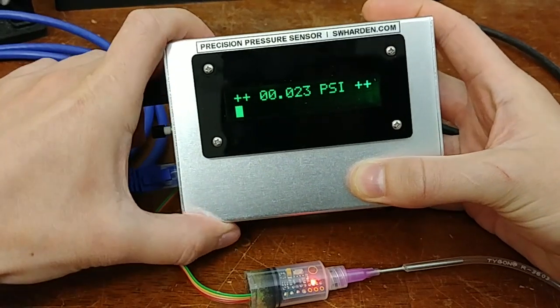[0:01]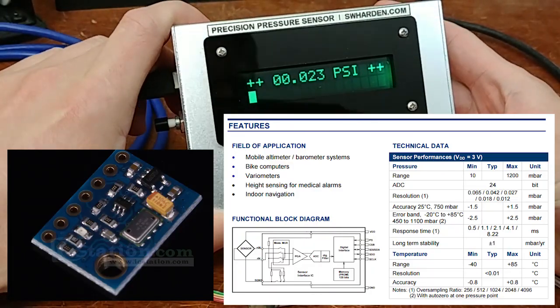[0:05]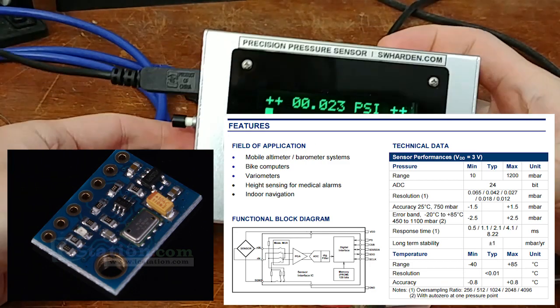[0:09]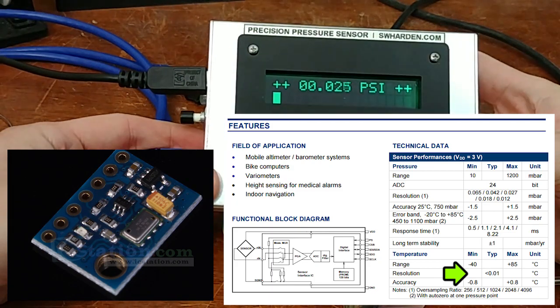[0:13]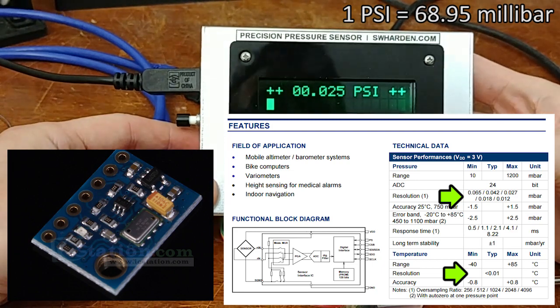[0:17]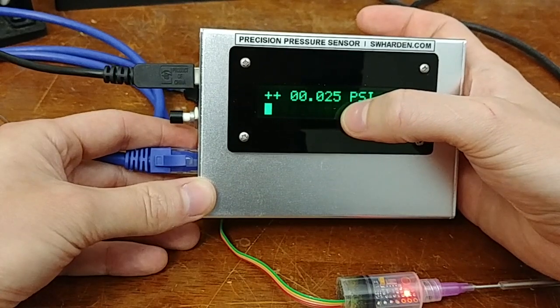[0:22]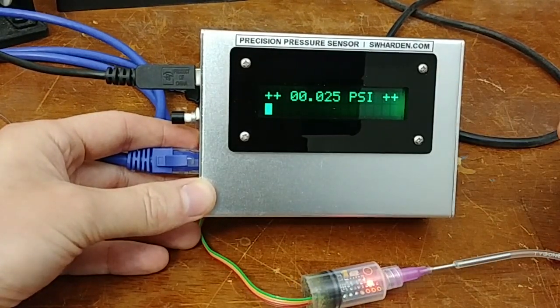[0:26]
This is a pressure sensor that I just made. It's based around an MS5611 24-bit pressure sensor. And this thing can sense temperature down to 1/100th of a degree Celsius and pressure down to 1/10,000th of a PSI. And for this display, I'm only having it show 3 decimal places. And the reason is that it kind of flickers a lot if I had the 4th decimal place.
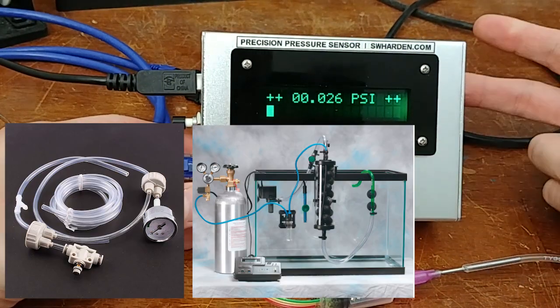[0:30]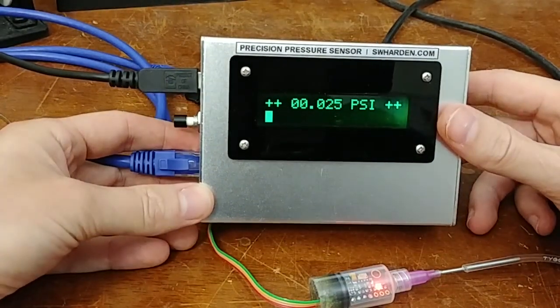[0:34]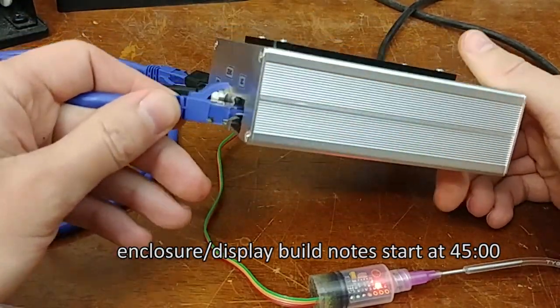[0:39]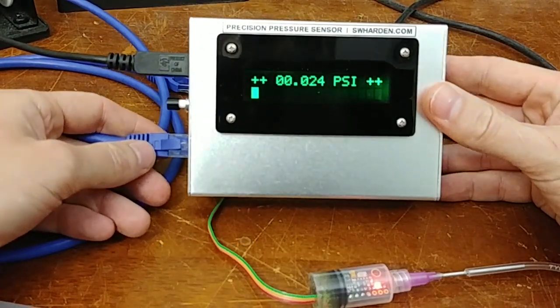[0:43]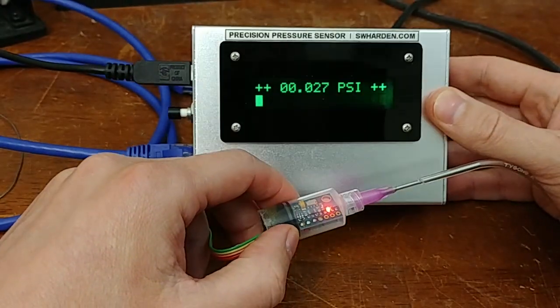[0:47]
And I wanted a pressure sensor because I'm building a yeast reactor as part of an aquarium thing that I'm building. You can Google what a yeast reactor is to learn more about that. But I also designed this in such a way that the same design can be used for industrial or scientific purposes. So if you want a quick and easy high precision pressure sensor, this is a good option.
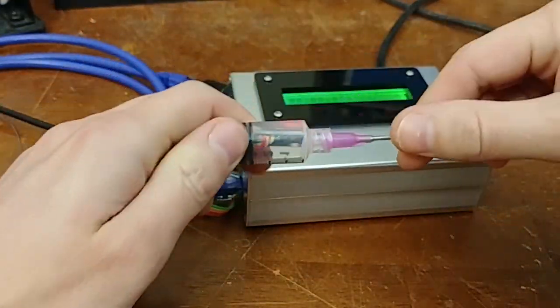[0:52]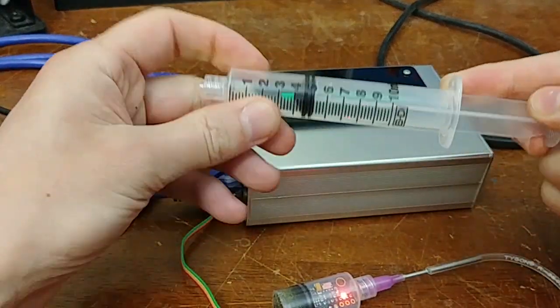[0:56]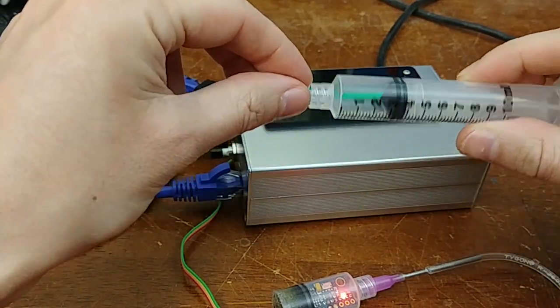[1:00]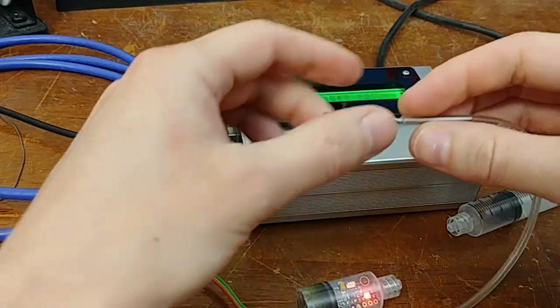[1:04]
So the actual pressure sensor is located in here. This is a syringe, kind of like this. So this is a 10 milliliter syringe. You can get these on Amazon very inexpensively. And they have these convenient little twist connectors, so you can twist anything to the end. And you can also get these blunt needles on Amazon.
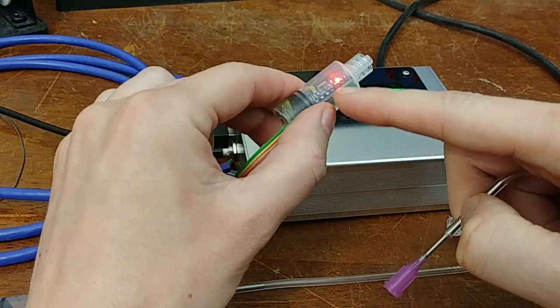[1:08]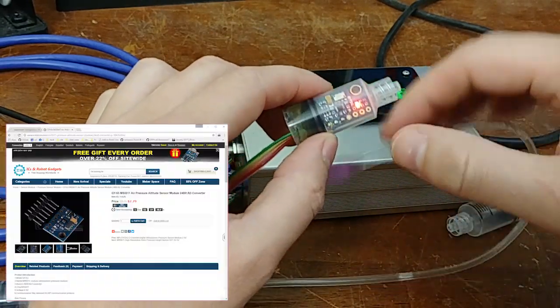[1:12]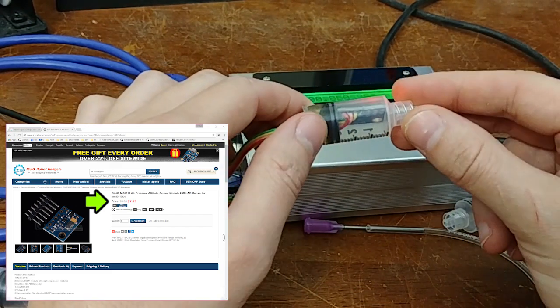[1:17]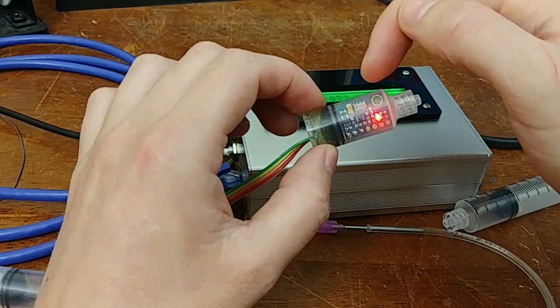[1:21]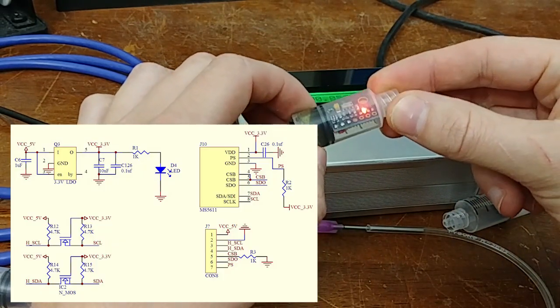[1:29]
And here is a breakout board for the MS5611. And I got the breakout board from icstation.com. And this board is pretty cool. It's a little bit less than $10. And it already has the pressure sensor, which is the small box, the silver device on the very top. And it's broken out so that it can accommodate a 5-volt power supply.
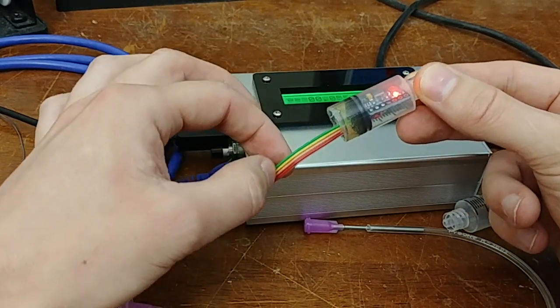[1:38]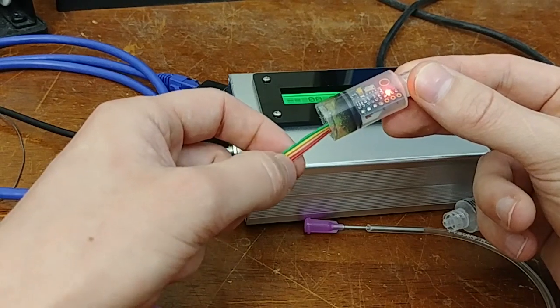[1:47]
And it has all the circuitry it needs, so you can just interface it directly with a microcontroller using an I2C interface. So of these 4 wires coming in, 2 are power, so plus 5 volts and ground, and the other 2 are two-wire interface, or I2C. So there's a clock line and a data line.
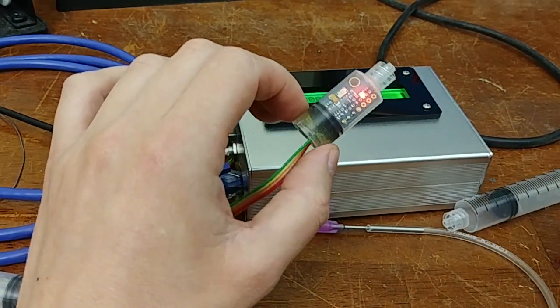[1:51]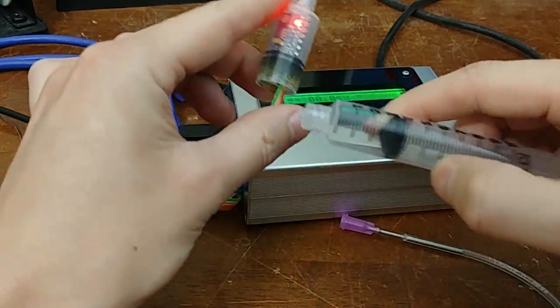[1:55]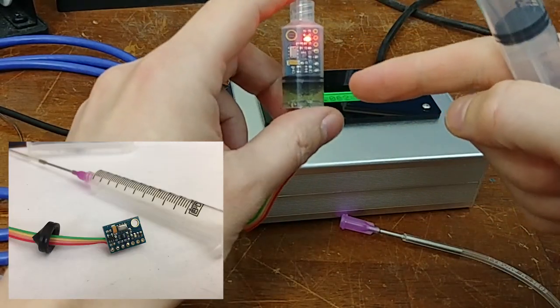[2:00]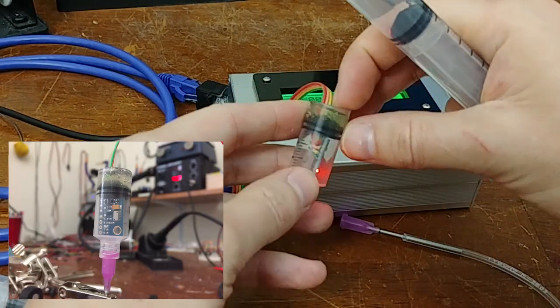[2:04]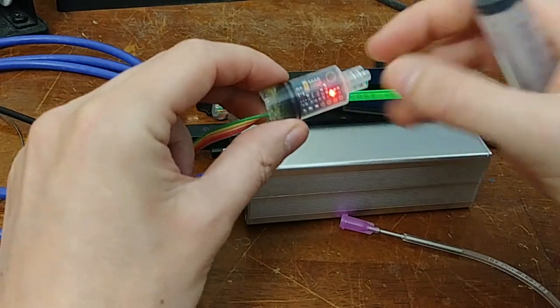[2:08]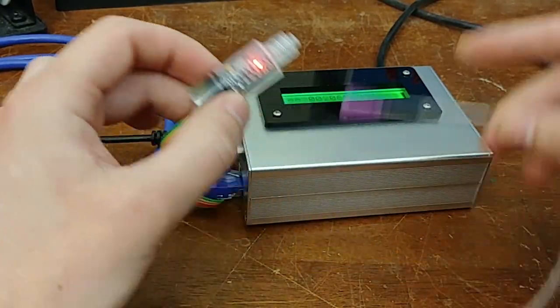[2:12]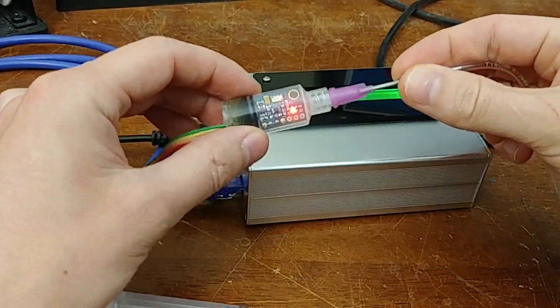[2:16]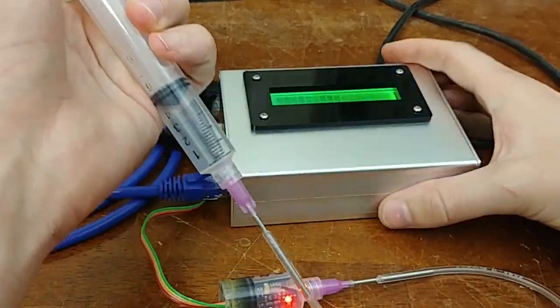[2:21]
The plastic enclosure is just one of these 10 milliliter syringes cut off with the razor blade, and then I took the little stopper off and inverted it, and then filled it with an epoxy that dries hard. So this is a hard plastic that's airtight on top now. So I've got my pressure sensor, wires coming out of it, and an easy connector that lets me connect it to whatever I want. So for this example, I'm just going to connect it to a tube so I can adjust the pressure here and show you what it looks like.
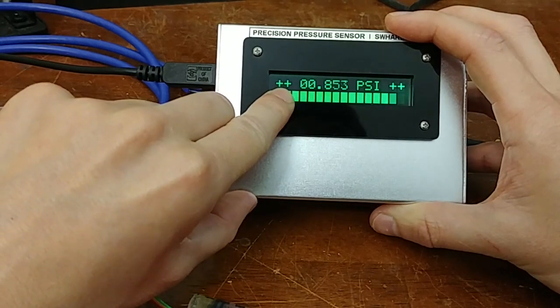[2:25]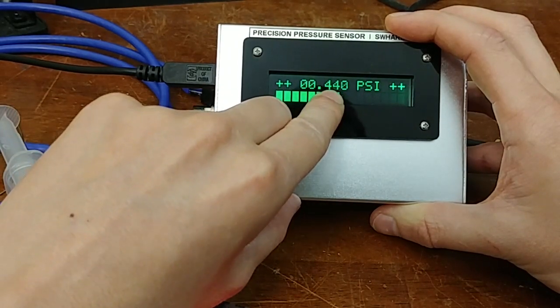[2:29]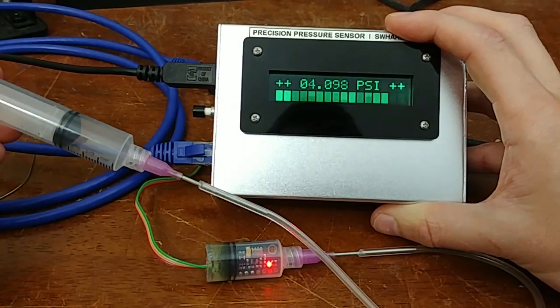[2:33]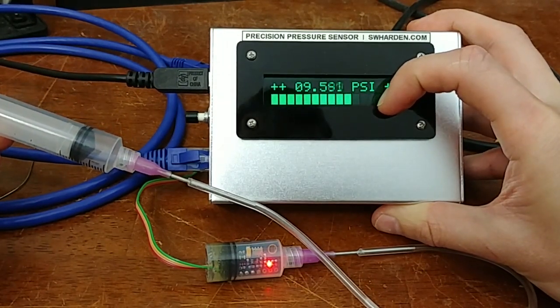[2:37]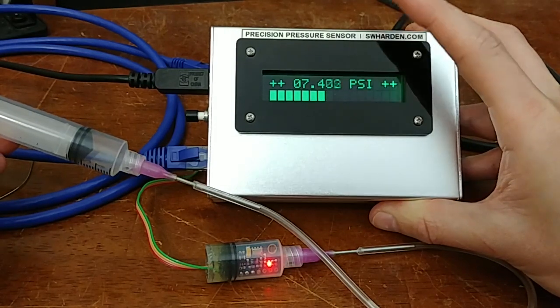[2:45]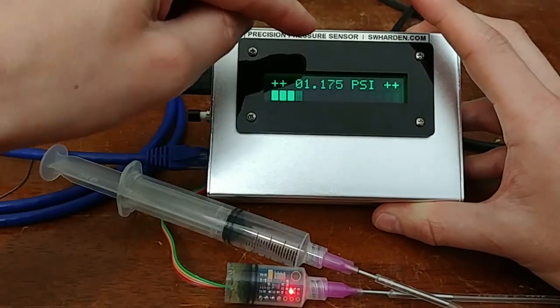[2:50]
So the plus sign here shows that it's a positive pressure. It'll turn minus when it goes negative. And this is the pressure in the pressure sensor. So I can kind of slowly increase it. And the bar at the bottom is a bar graph of pressure with respect to the nearest PSI. So if I slowly let go, it goes from 8, it'll go down to 0, and then 7 goes down to 0. So that makes sense. And if I let go, you can see this slowly relax, and the pressure will eventually come back to 0.
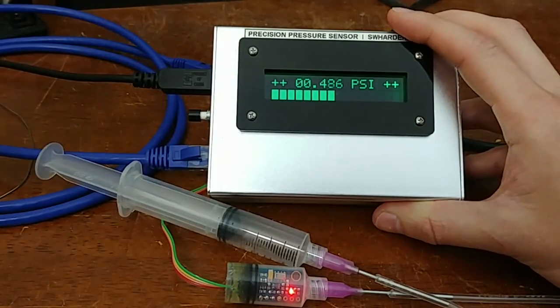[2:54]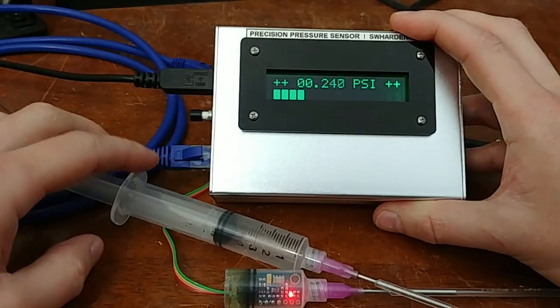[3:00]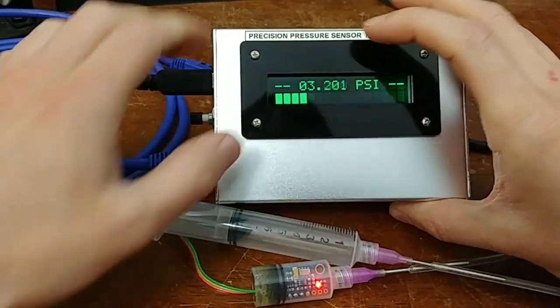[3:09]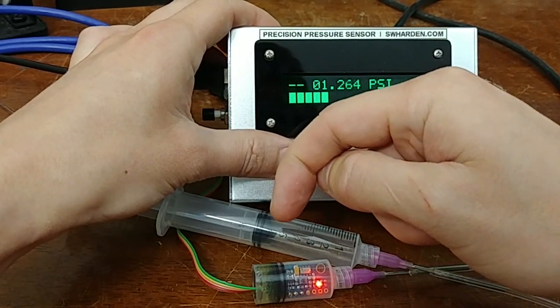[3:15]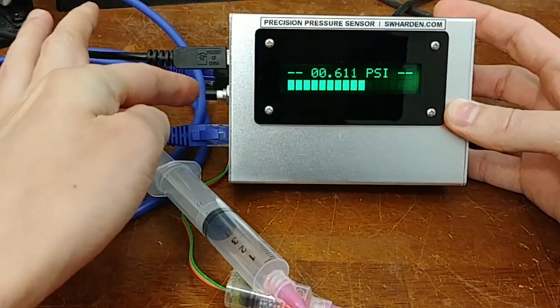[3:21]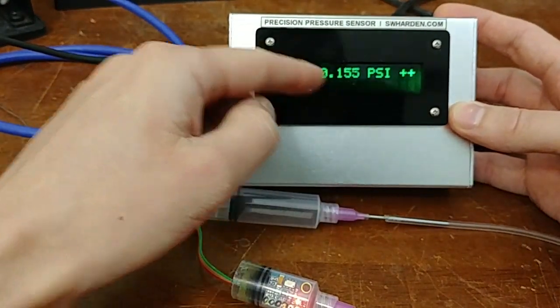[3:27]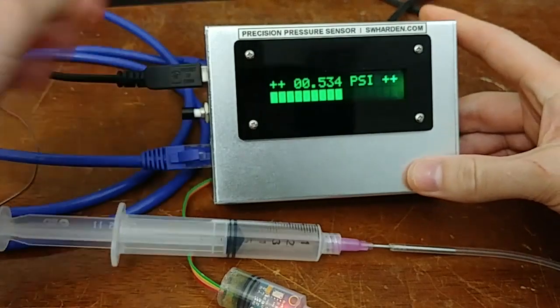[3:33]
For the yeast reactor application, there is a desire that I have to set 0 other than atmospheric 0. So I'll demonstrate that here. Actually, let me go ahead and I'll show you that this can do a vacuum. So if I apply negative pressure, we can see this turns negative, and it shows right now we have about negative 2 psi, and it's increasing as suction just naturally draws the plunger forward. But I can push this reset button here, or the 0 button, and when I push it, it makes that the new 0. So as it is equilibrating, it actually appears as if it's increasing. So I'll take this out just to kind of reset it, hit 0. So that's a pretty good 0.
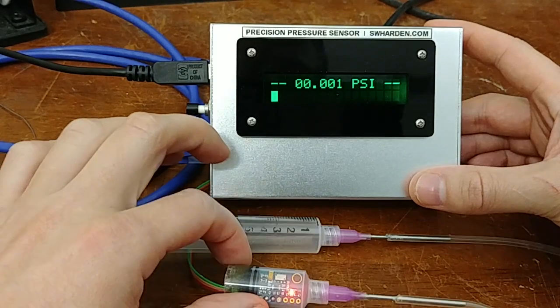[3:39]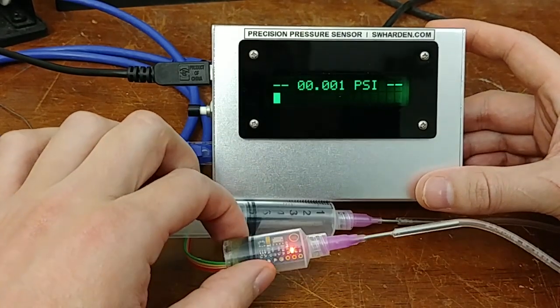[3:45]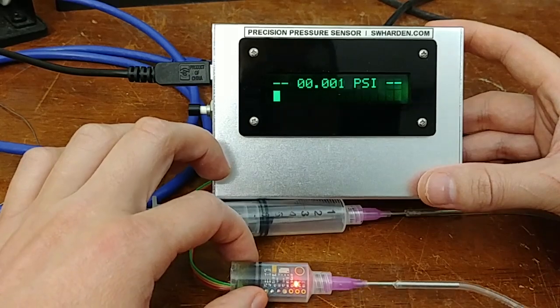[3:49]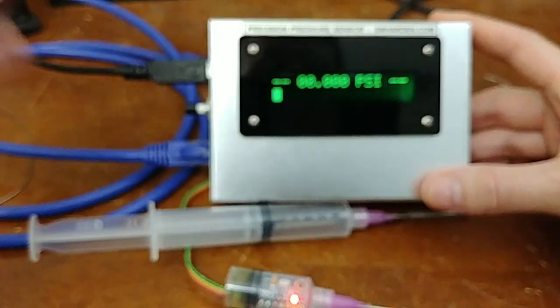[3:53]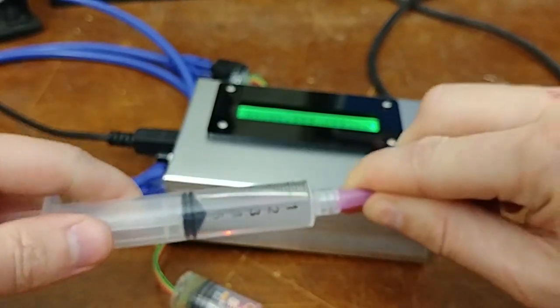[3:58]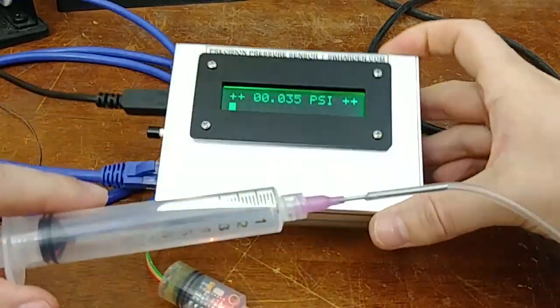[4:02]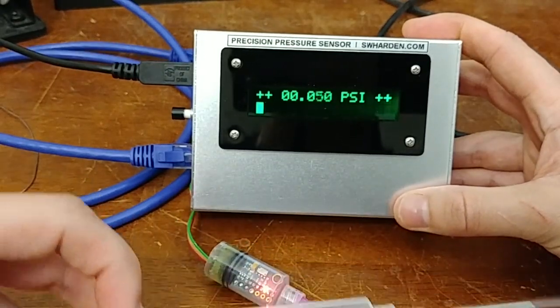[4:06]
This thing has a limit. I forget what it is. I think it's maybe 2 atmospheres of pressure, so about 24 psi. You're not going to hook this up to a huge high-pressure air tank or something like that. But as long as your application calls for precision measurement somewhere around an atmospheric pressure, this is great. I don't know if I can max it out. Let me try. Okay, so we've got 1 full syringe. I'm going to give it a lot of pressure.
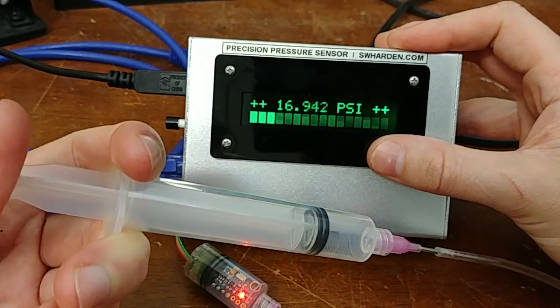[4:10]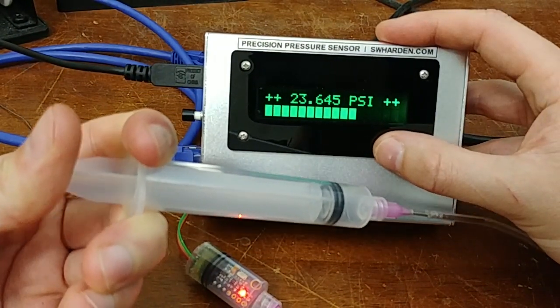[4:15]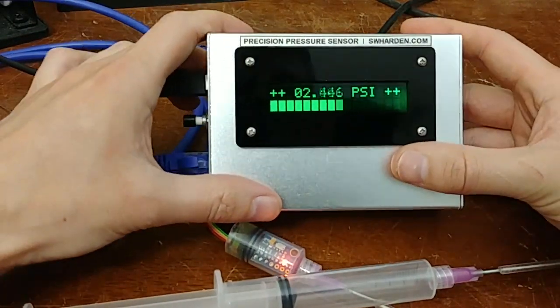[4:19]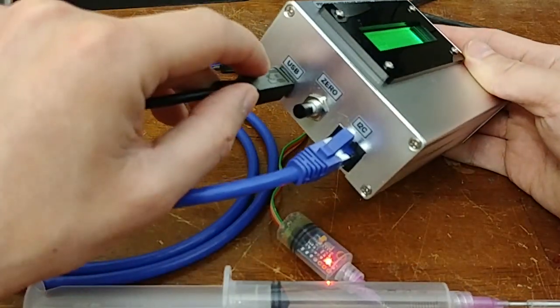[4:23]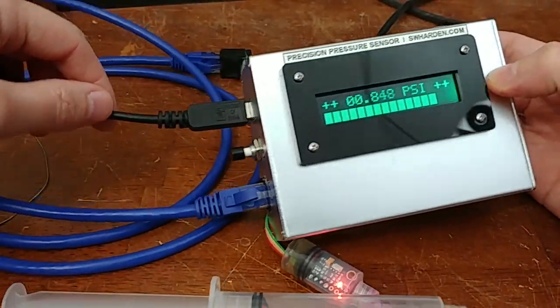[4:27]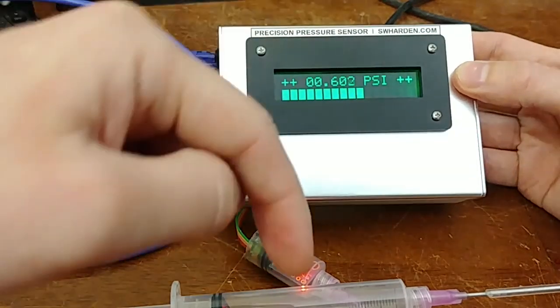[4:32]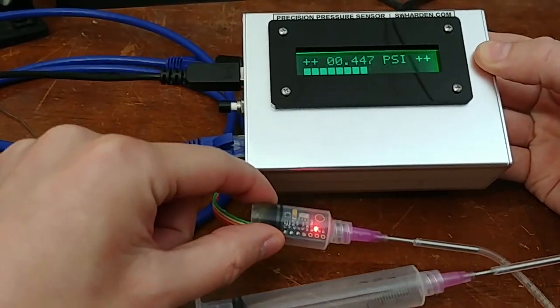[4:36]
And yeah, it looks like it maxes out at about 23 psi. But I mean, shoot, that's plenty above what my application is. So the ports on the side, this USB is not being used for data currently. Right now it's just being used for power. So it's going to any USB port. That gives it the 5 volts it needs to power the screen, the microcontroller inside, and the pressure sensor, which has some regulation on board that drops it down to 3.3 volts as well.
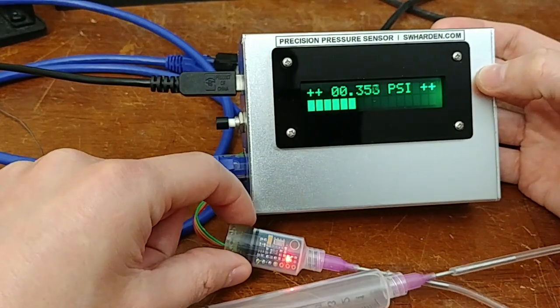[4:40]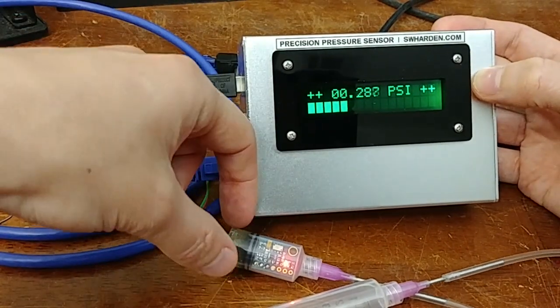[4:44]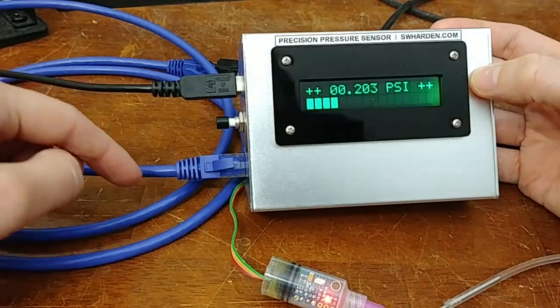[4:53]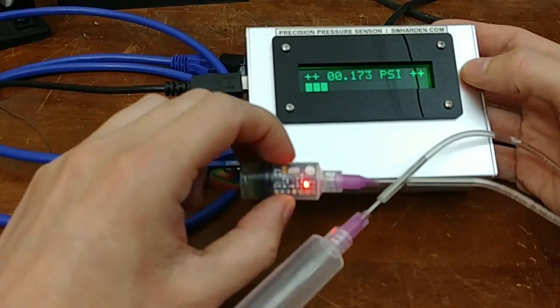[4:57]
And actually, there's another consideration. USB power is typically noisy, and this is a precision device. That's another advantage of having this little breakout board. It's pretty convenient because it has the power regulation circuitry on the board. So I don't worry that I'm sending noisy voltages down these wires. It does a pretty good job of cleaning it up at the level of the board.
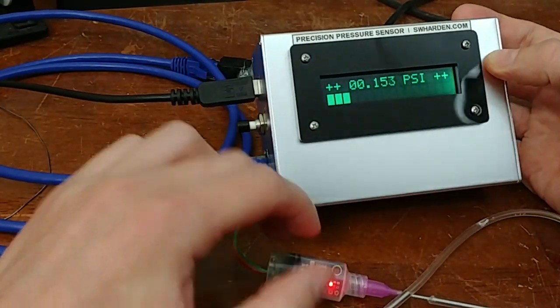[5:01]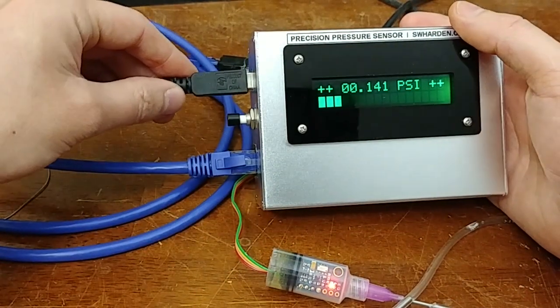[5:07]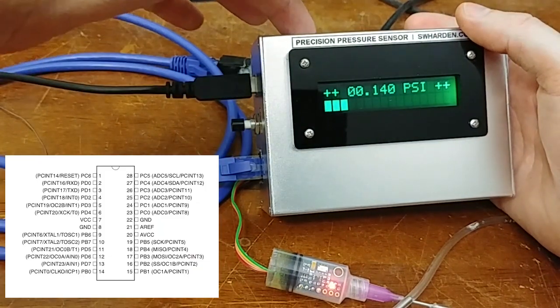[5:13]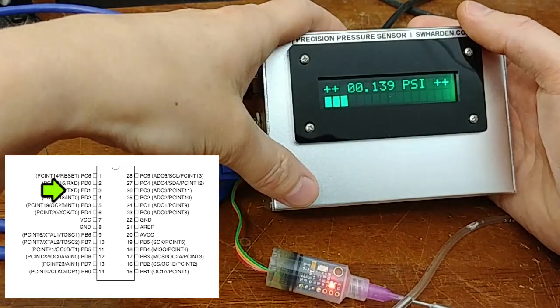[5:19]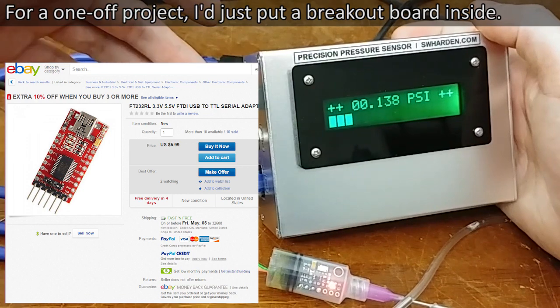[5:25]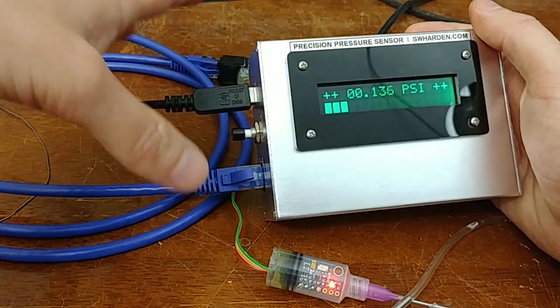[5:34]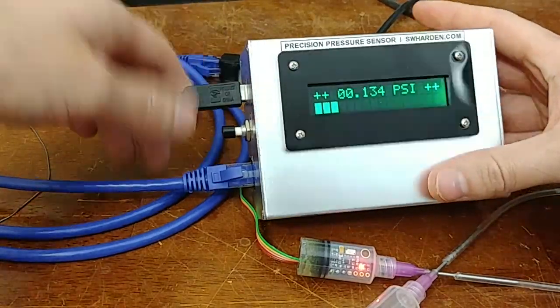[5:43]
For my application, I don't need to log these numbers into a computer, but since we already have a USB interface, it would be extremely easy to do just that. Probably the only difference is the microcontroller inside. I would use the serial transmit pin, because it natively supports a USART serial protocol. I would interface it with an FTDI chip as a USB to serial adapter, and then I could just hook it up to the data plus and minus lines of the USB port. So with no extra connectors, I could make this an active USB device that looks like a serial port to your computer that just continuously dumps these values, if I were interested in that.
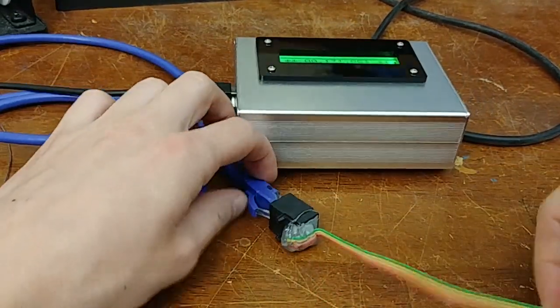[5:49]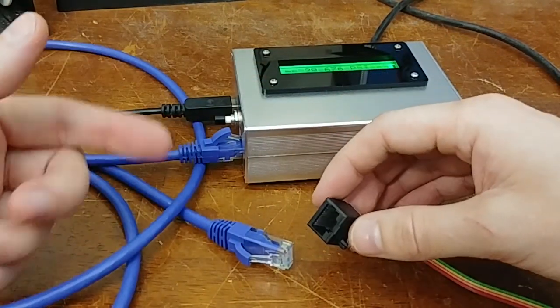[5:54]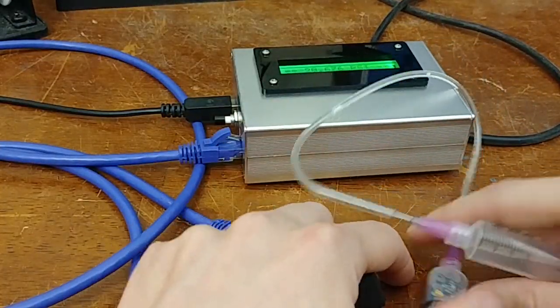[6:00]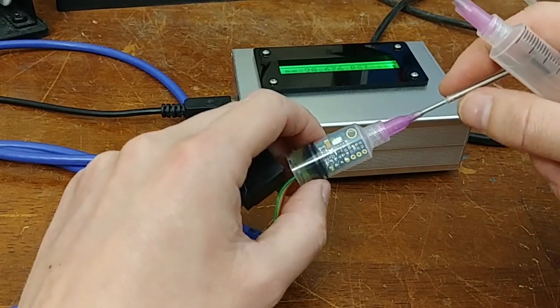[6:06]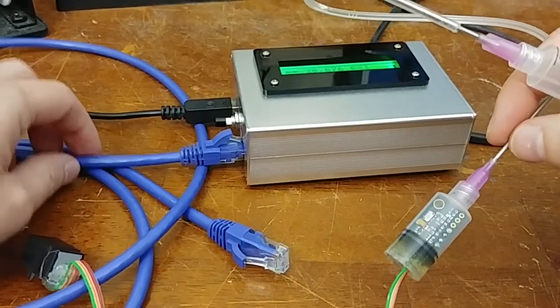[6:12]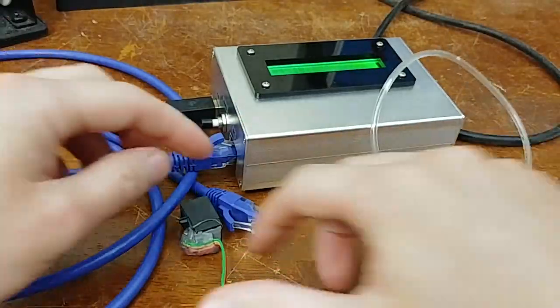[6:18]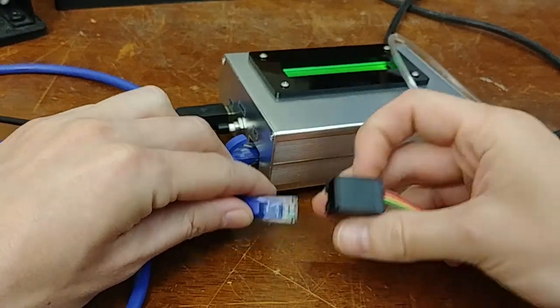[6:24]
Also, we already talked about what these four lines are, but it's kind of cool because I interfaced this with an Ethernet jack, and this isn't using Ethernet protocol, it's just taking advantage of the twisted pairs to send I2C over a long distance. And I2C isn't always trivial to send over a long length of wire, so Google around how to do it. You can get I2C drivers, and in this case, I'm just taking advantage of the twisted pair nature of the cabling to let me have an arbitrary amount of distance between the sensor and the display. And then I have another connector here. So when these are connected, I can sense pressure in real time.
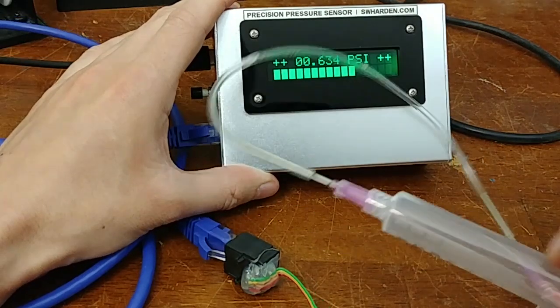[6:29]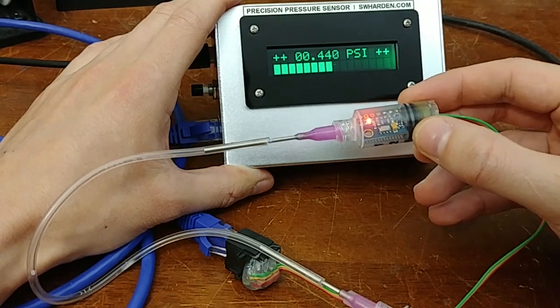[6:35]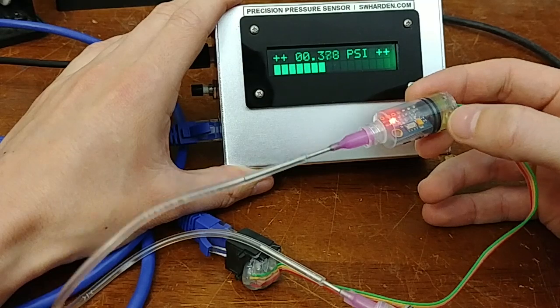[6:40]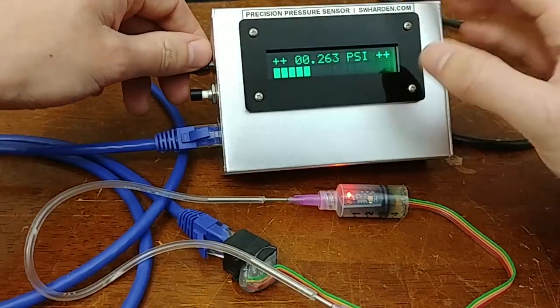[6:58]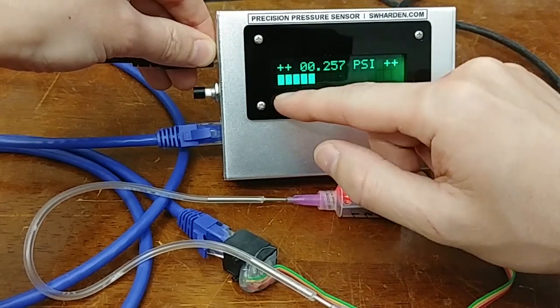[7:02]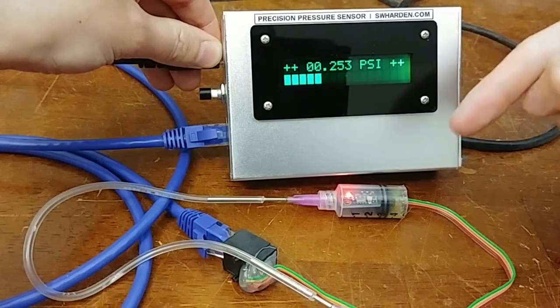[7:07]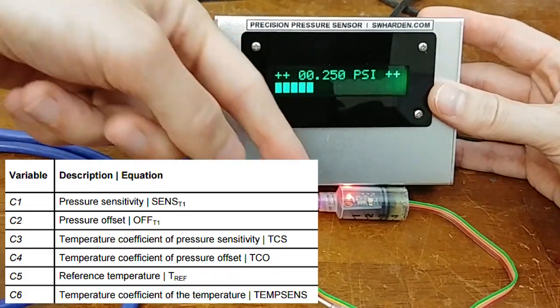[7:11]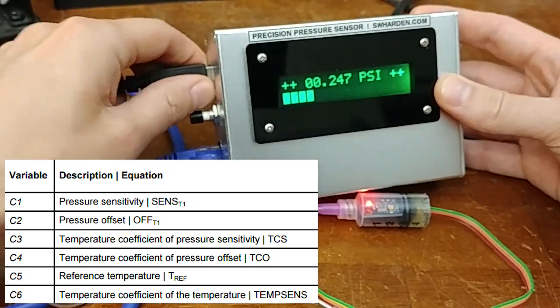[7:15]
I'll also take a second to mention that in order to generate a precise pressure reading, you have to have a precise temperature reading, which is why there's a 24-bit thermometer built into this device. Right from the factory, this device has a calibration memory bank where each device is individually calibrated, and things like its offset, its sensitivity, and its pressure sensitivity are measured and stored on the chip. So if I power cycle this, you will see a debug message that goes really quickly, but it'll say something like C1, C2, C3. Those are the program memory values that were stored at the factory where this was made. We're going to go through the data sheet and talk about this in more detail, but I'll power cycle it here so you can see.
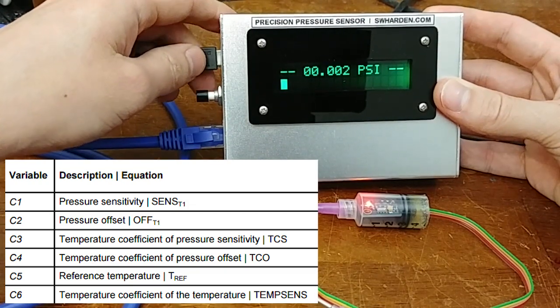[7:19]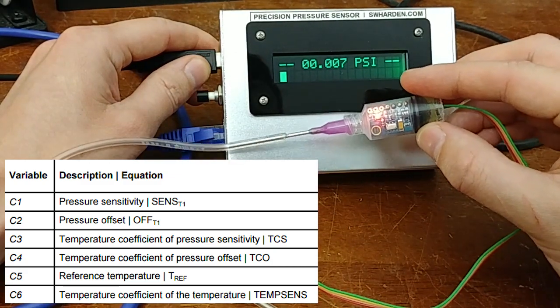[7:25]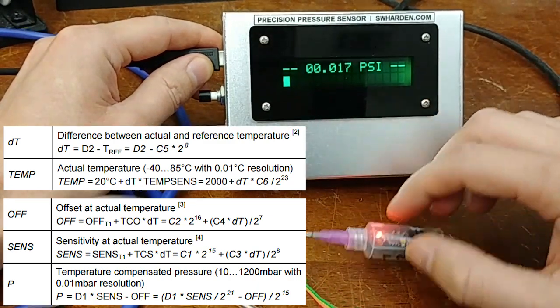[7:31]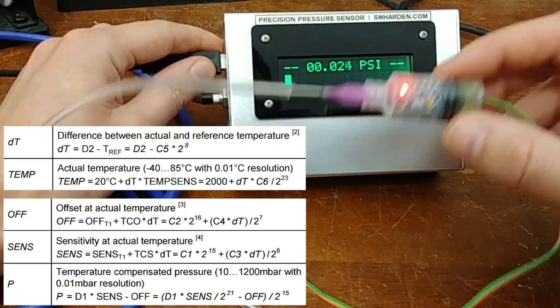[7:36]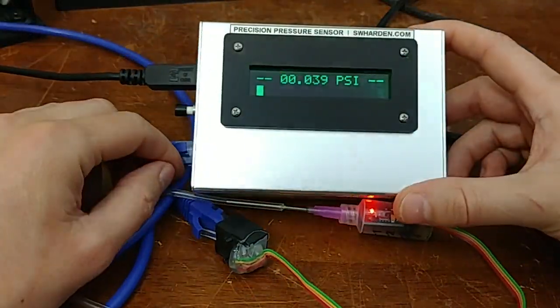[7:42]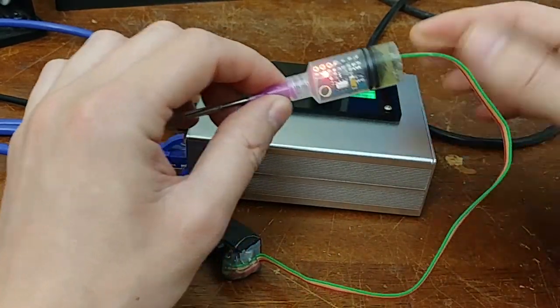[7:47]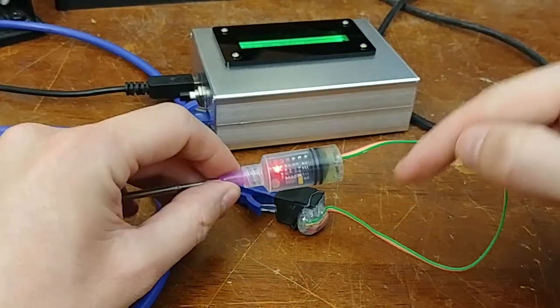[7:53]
Yeah, so those six values help take the 24-bit number from pressure and temperature, and by running it through an equation, which is also listed in the data sheet, you can generate a very precise pressure measurement using the pressure and temperature readings off of here. So let's go into a little more detail, and I'll show you the design considerations behind how I actually built this, and show you how to interface the pressure sensor directly with a Bus Pirate, which is pretty cool. We don't need any custom programmed microchips for that. We can interface this directly with a Bus Pirate, poke around, probe some of its data, and then record and plot some of its data using Python in real time.
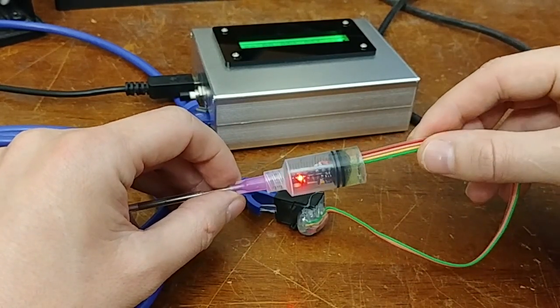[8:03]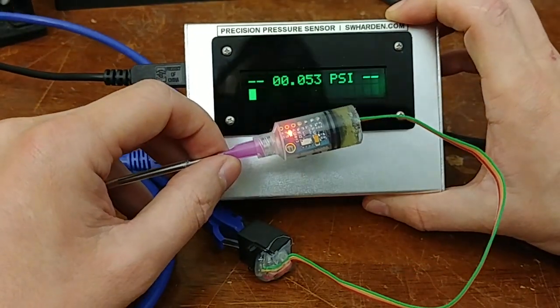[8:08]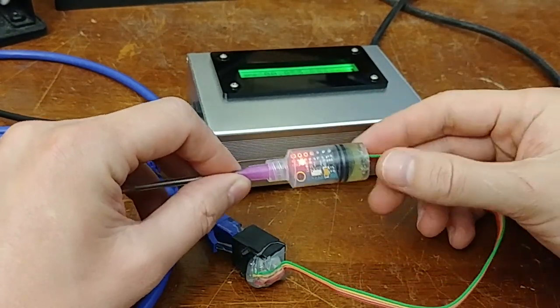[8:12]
And we can also sniff around and observe the protocol using a logic analyzer. So this video, rather than just demonstrating what this does, will also go through and show a little bit of a step-by-step on how I designed a microchip to interface this sensor. So let's take a closer look.
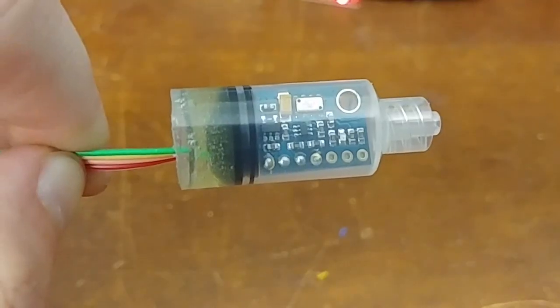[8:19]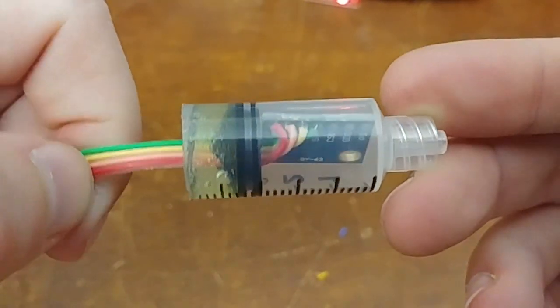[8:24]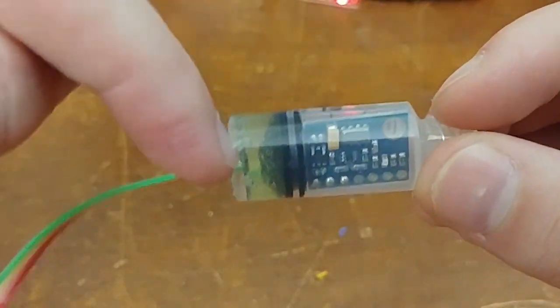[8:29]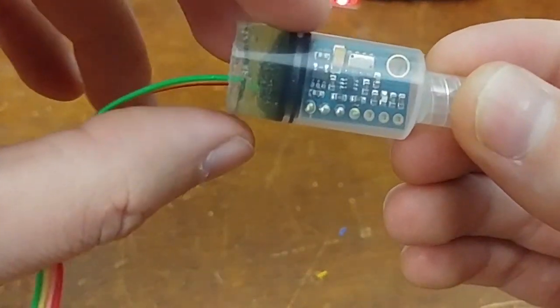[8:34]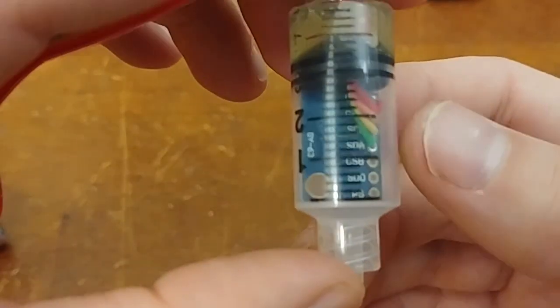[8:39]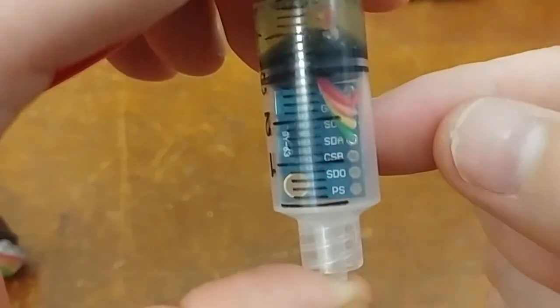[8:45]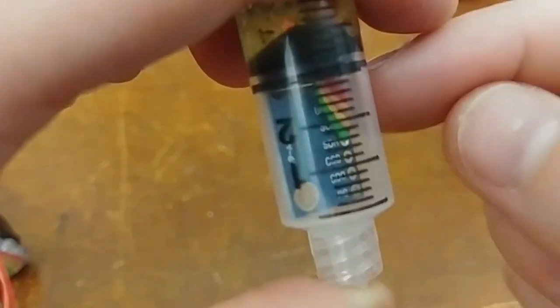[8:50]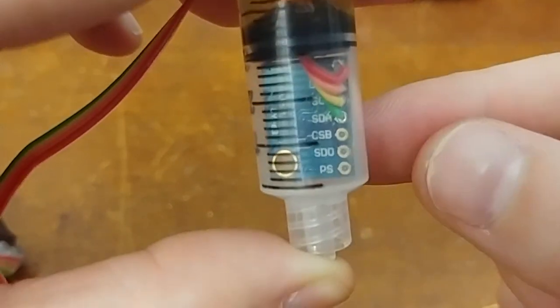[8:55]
So my first goal was to interface this device with the computer. The breakout board came fully assembled, and I just stuck it in the tube, added the piece of rubber, and then acrylic on top. So this is hard. And I just connected to four of the wires. There are some extra connectors, but for this application, they weren't needed. It's a little bit hard to read back in there, but the only wires from top to bottom are VCC, or power, which I'm giving 5 volts, ground, or GND, and then SCL, which is a clock line, and SDA, which is a data line.
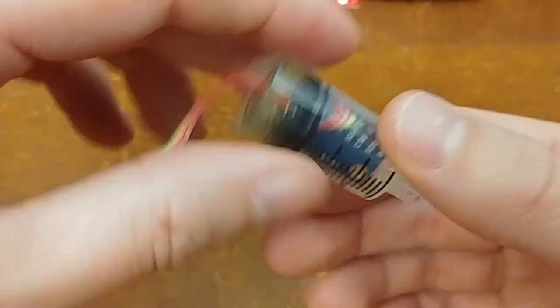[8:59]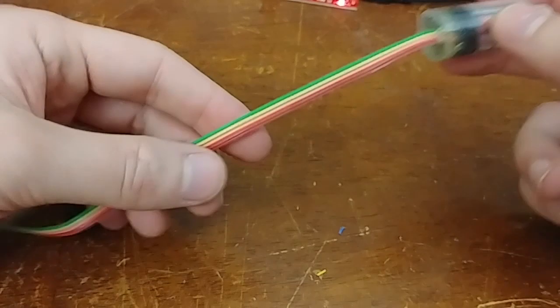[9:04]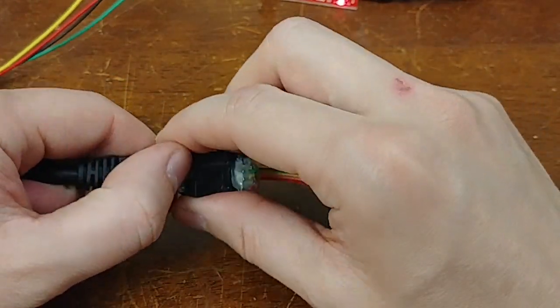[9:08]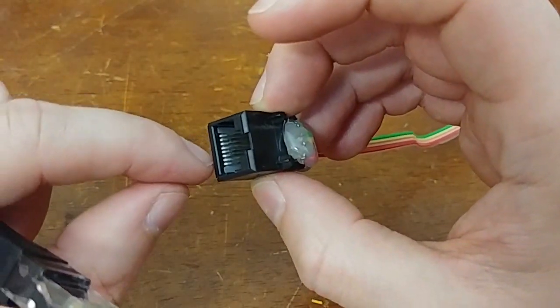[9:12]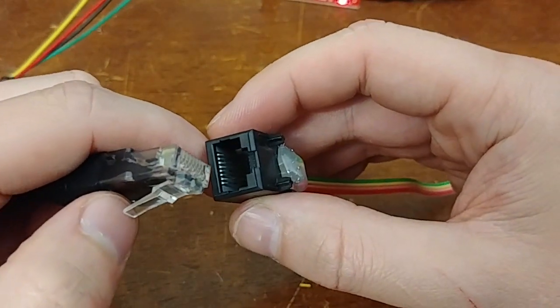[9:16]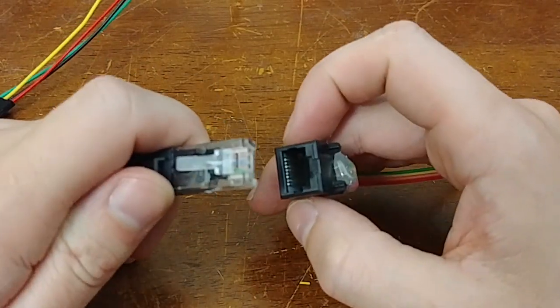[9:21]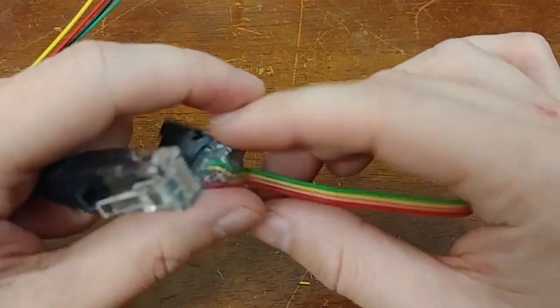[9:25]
And that's clock and data for a two-wire interface, or I2C. So after I had wired to those four things, I just connected those four wires to an Ethernet port, and I made every other pin ground so that all of these twisted pairs are twisted with ground. And I only connect ground on one side of the connection. But again, you can Google for how to use twisted pair to send I2C over a moderate distance.
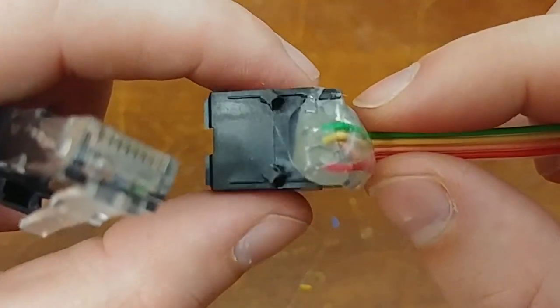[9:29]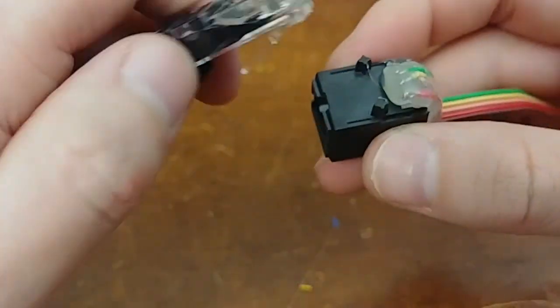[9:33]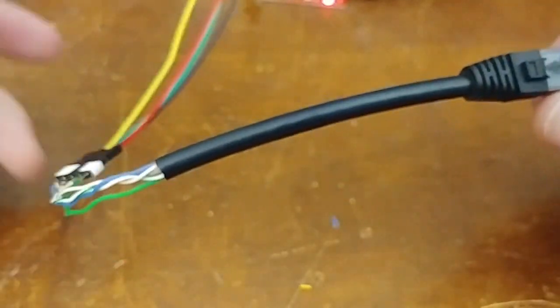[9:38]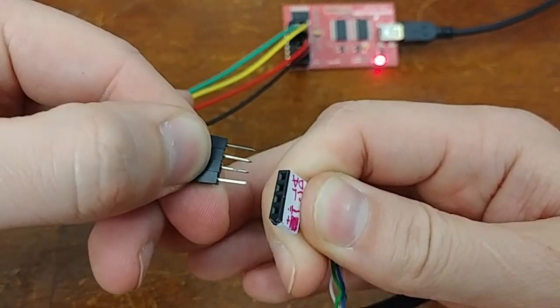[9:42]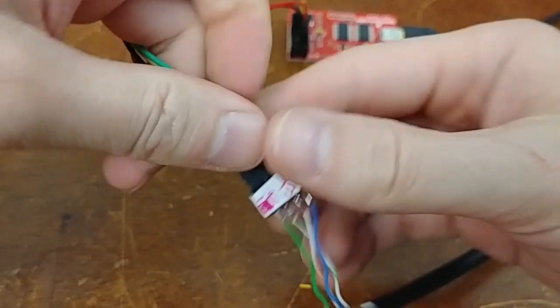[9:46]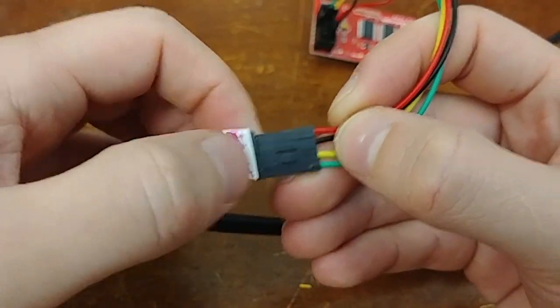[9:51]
And these connectors are pretty easy to obtain. And then I added a little bit of hot glue to prevent it from pulling up. So this is my development cable. It just goes straight through to some headers like this. And then I can insert the headers. And I added little labels so you can see they're in the same order: plus, ground, clock, and data.
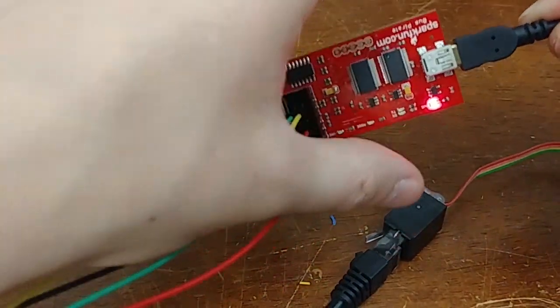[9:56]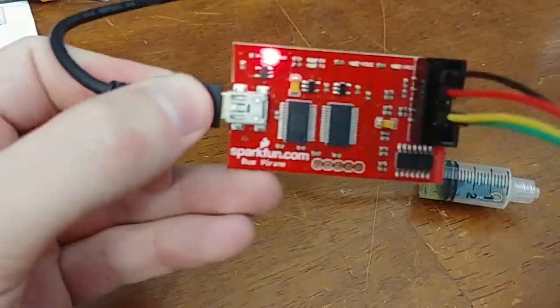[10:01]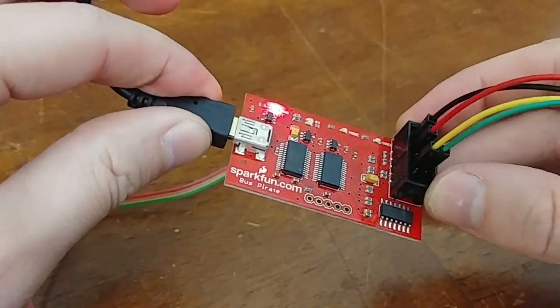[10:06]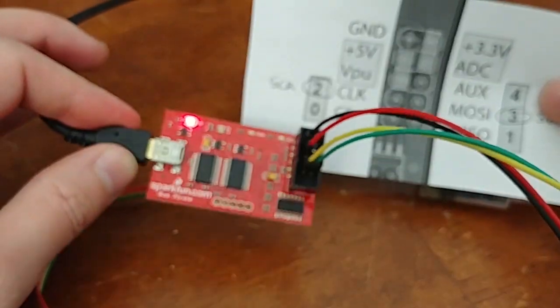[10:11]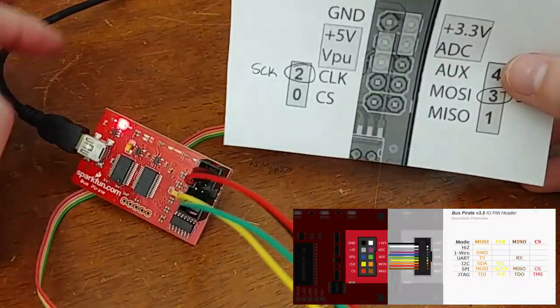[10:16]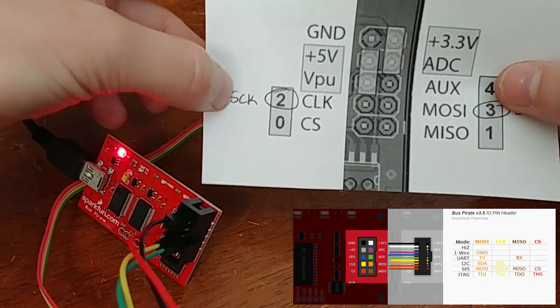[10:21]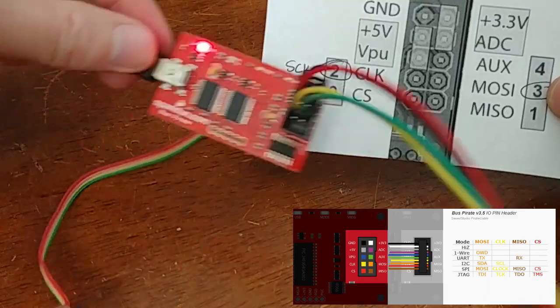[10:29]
And then those wires I'm going to connect to my Bus Pirate. So this is a Bus Pirate. I forgot exactly what version it is. They come out with new versions every once in a while, but for basic operation, they pretty much all work the same. And I have a little cheat sheet here that is the same wiring as the Bus Pirate pinout here. And I connect to this 5 volts, ground, SCK or SCL for the clock, and then SDA for the data. And this was obtained just from the website that documents the Bus Pirate.
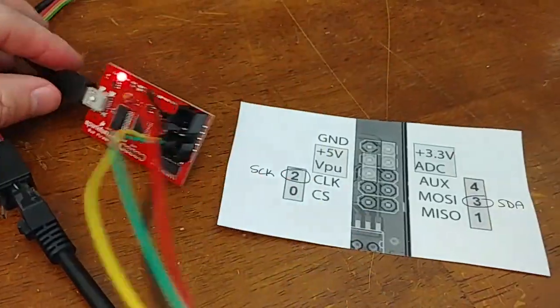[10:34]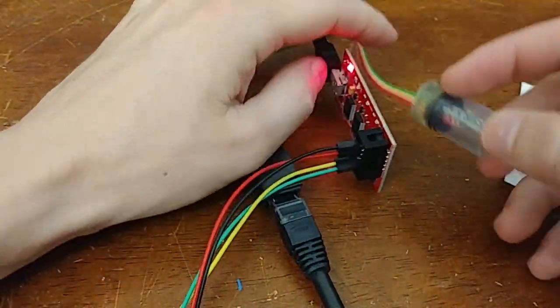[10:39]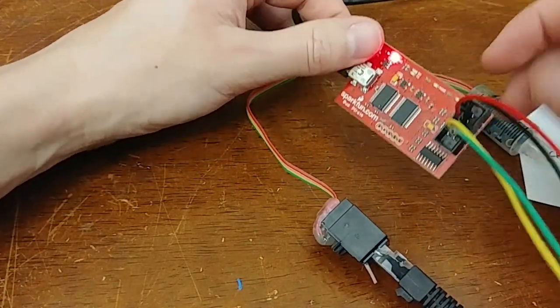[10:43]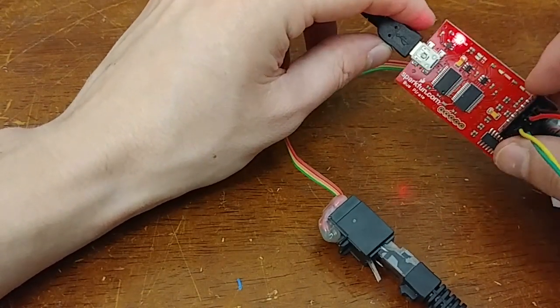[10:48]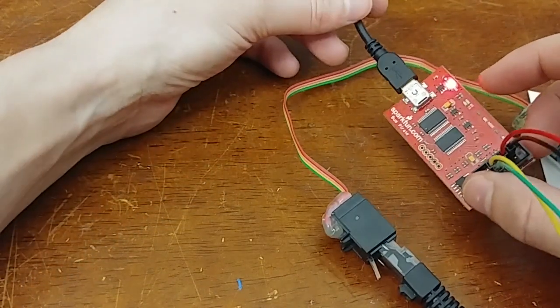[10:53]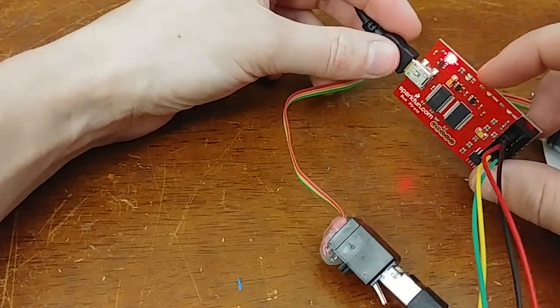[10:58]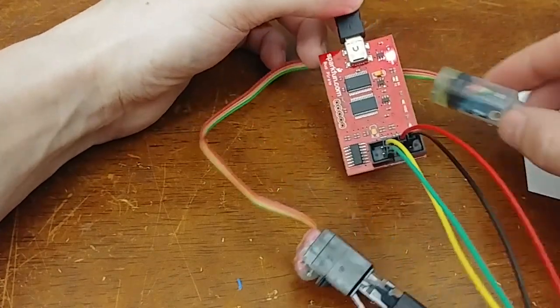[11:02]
And then I plug it into USB, plug it into my computer, and this is all I'm going to need to be able to use my computer to talk with this pressure sensor. So let's take a look. And actually, the way this works is it's two chips. Well, it's three chips, but gosh, it's more if you consider those chips. But it pretty much is a USB serial converter. So this is seen by your computer as a serial port, but it lets you use the serial protocol to interact with the PIC microcontroller, which can send I2C commands to and from other devices.
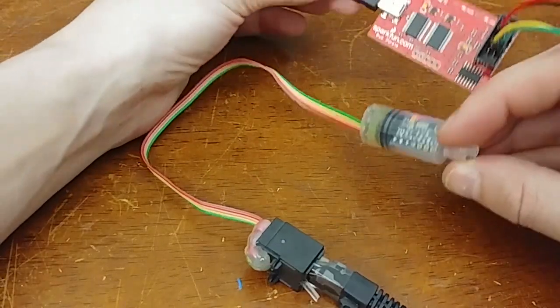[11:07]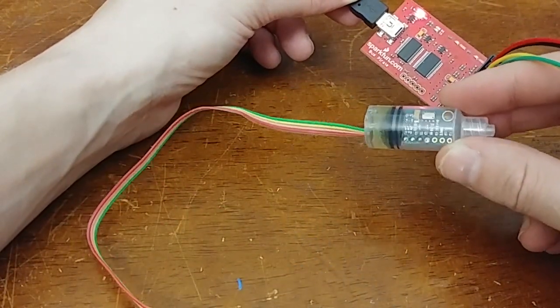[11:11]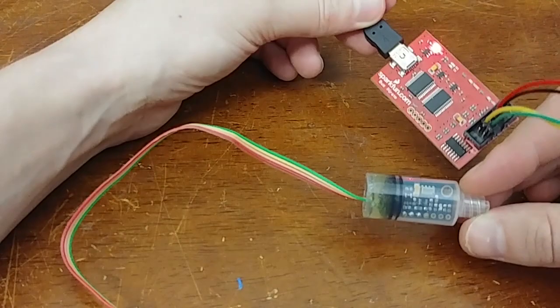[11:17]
So we're going to go through, look at the data sheet, figure out what type of commands we would expect to send to get meaningful data from this, and actually poke around sending commands to the Bus Pirate to try to get these two devices talking to each other. So let's get started.
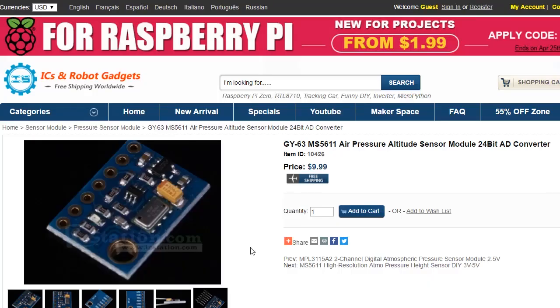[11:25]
So this is the device that I'm actually using. This is from icstation.com, and it is an MS5611 pressure sensor breakout board. And its intended use is as an altitude sensor. This is so precise that it can measure the changes in air pressure down to 10,000th of a PSI, which can give you an altitude resolution of about 20 centimeters. So for designing quadcopters or altitude sensors in cell phones, things like that, this temperature pressure sensor would be great.
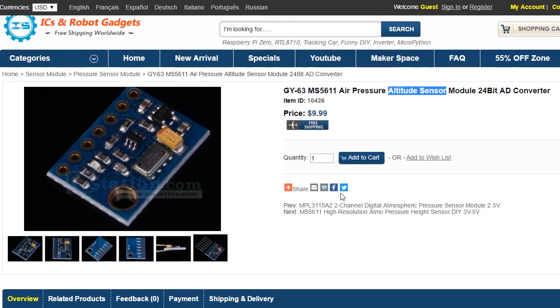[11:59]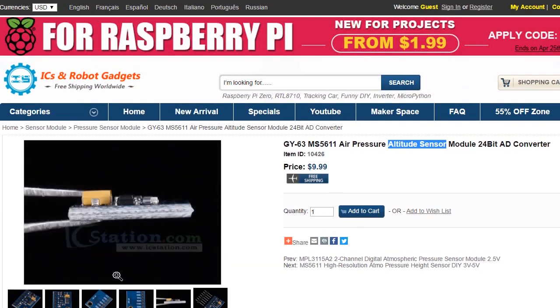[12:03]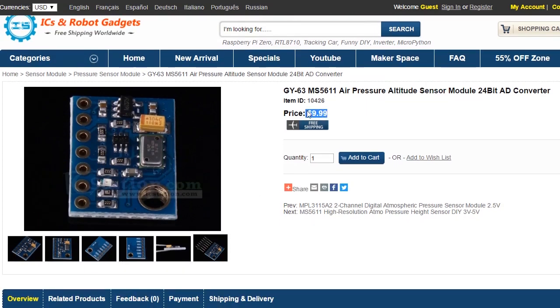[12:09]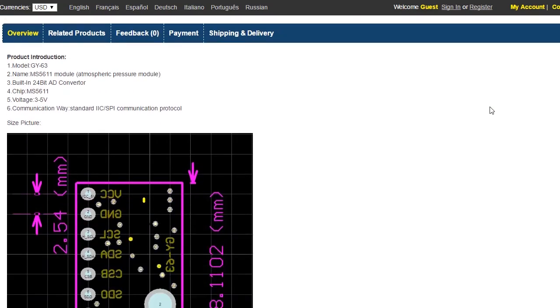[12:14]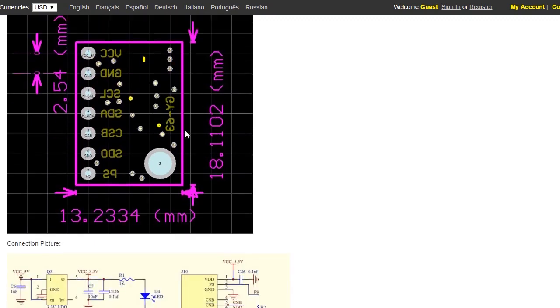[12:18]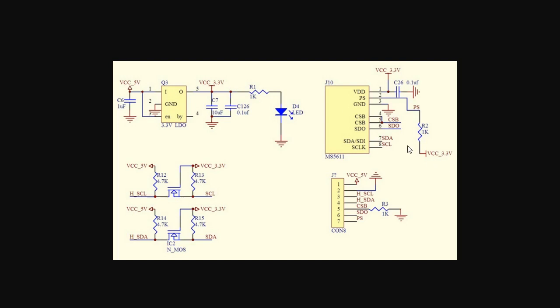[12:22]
My application is a little bit different, but I can certainly utilize the small form factor and the convenient circuit which exists on the breakout board, and so this is great. And the price is less than $10 for this really high quality sensor. So we'll scroll down and look a little bit closer. It shows the dimensions of the breakout board, and this is what I'm really interested in. We zoom in a little bit and see the extra circuitry on the board.
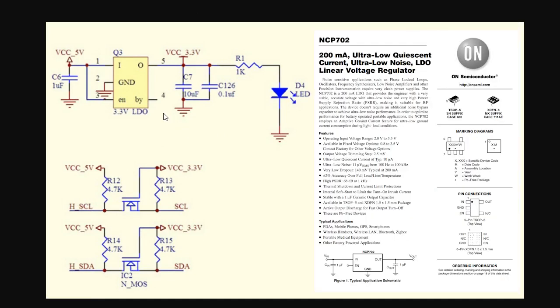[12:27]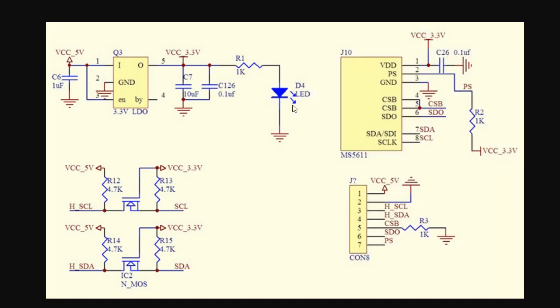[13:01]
So it has a linear voltage regulator, which can help drop the 5 volts down to 3.3 volts, and this regulator in combination with the capacitors really does a good job at smoothing out a lot of the power supply ripple on the 5 volt rail. So a 5 volt rail of a USB line is kind of notoriously dirty, but I can say with moderate confidence that even powering this directly from a 5 volt USB rail will produce a smooth enough power that we can get meaningfully good resolution and low noise from our pressure sensor. It also has a power LED here.
And then these are level translators. So my microcontroller is going to be powered on the 5-volt rail, not 3.3 volts. So as a result, all of the pins, when they're high and low, are going between 5 volts and 0 volts. They are not the 3.3 volt level that the pressure sensor would expect. So this circuitry here bidirectionally allows the data line and the clock line to be pulled low, and they translate the level from 5 volts to 3.3 volts. So that's convenient to have.
We have extra connectors, which we're not going to really worry about, but this lets us do things like change our I2C address. And then this is the actual MS5611 pressure sensor. It's hooked up with its necessary power line. It has some decoupling, so to further reduce noise on the power rail right next to the chip. And that's pretty much everything.
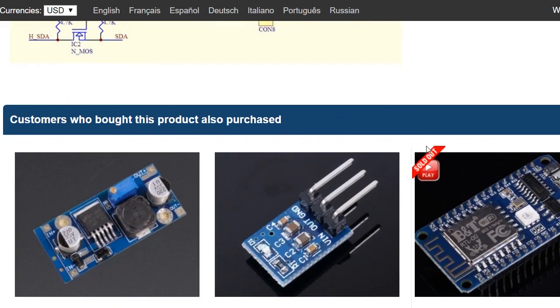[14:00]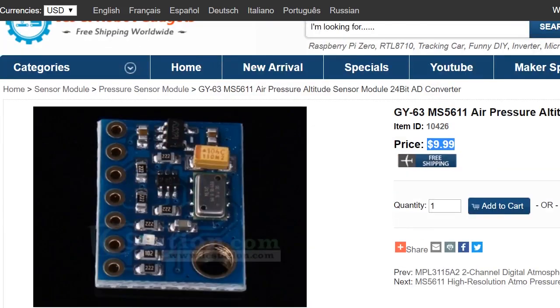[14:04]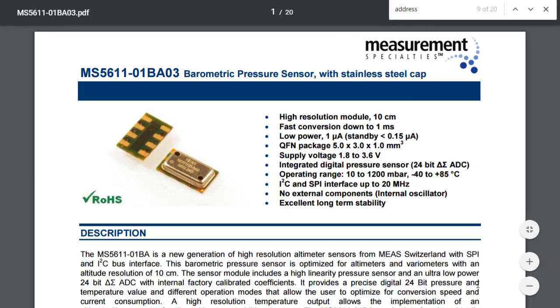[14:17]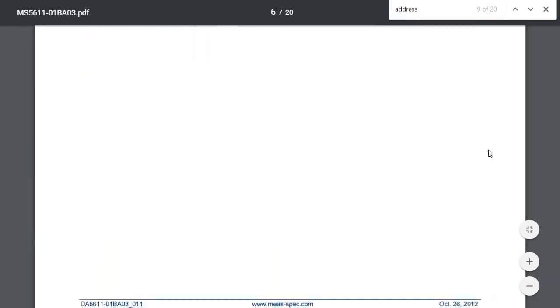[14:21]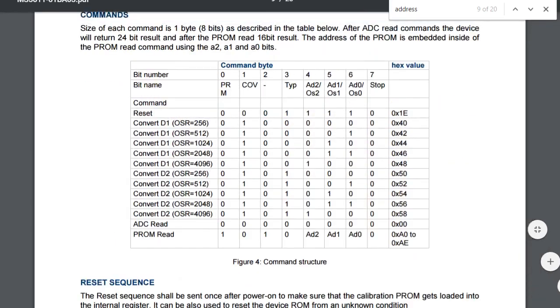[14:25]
So let's scroll down, see. Yeah, that's pretty much all we need to know to get started. I was also able to pull the data sheet for this device, and the actual core device is this small silver device right here. All this extra stuff is additional circuitry that we just looked at. The data sheet is kind of a moderate length, but it goes through all the necessary details to figure out how to interact with it.
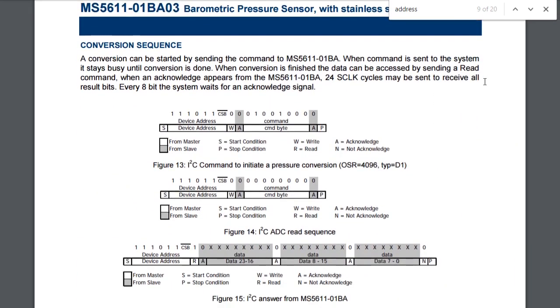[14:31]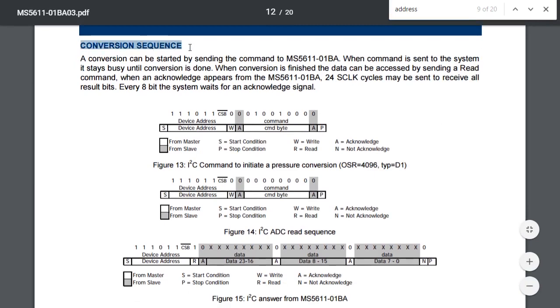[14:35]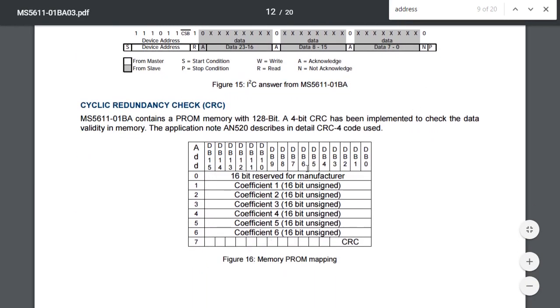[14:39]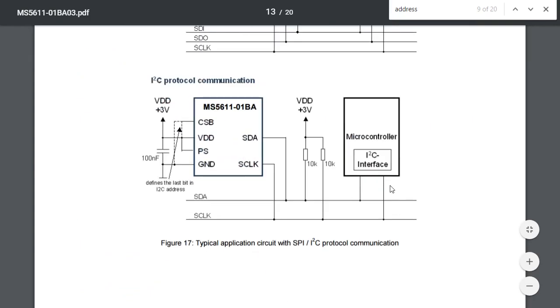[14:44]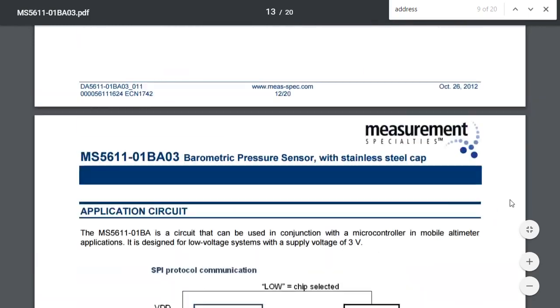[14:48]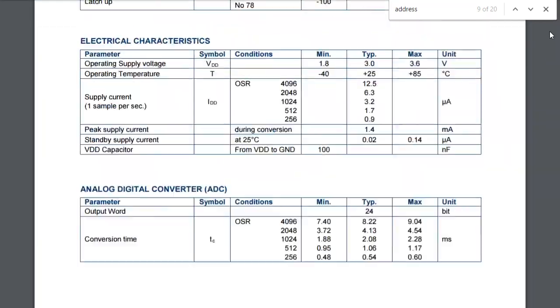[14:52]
So for example, these are all the commands which you can send. This starts to get a little bit complicated, but we'll work through it a little bit at a time. It shows you how to make a conversion, so how to measure temperature and pressure, and also how to read some of the PROM memory which exists on the chip for calibration. And it also has an example circuit diagram and all that. So with this should be enough to get us started. But let's not dive too deep into the datasheet yet.
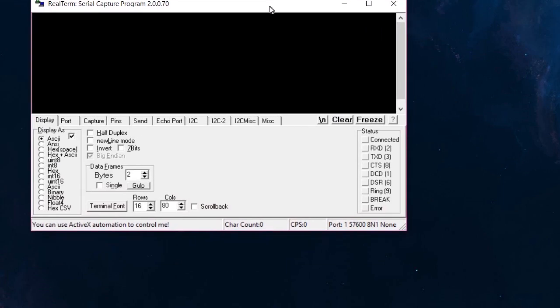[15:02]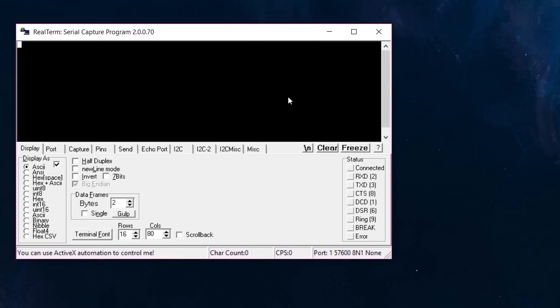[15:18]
Let's start with a program called serial term. Or actually, no, this is called real term. So I just opened this program. This will let me interface the bus pirate over the USB line, which really is just kind of a USB serial converter. And that's connected to the I2C lines of the pressure sensor. So hopefully we can get some information out of it using this.
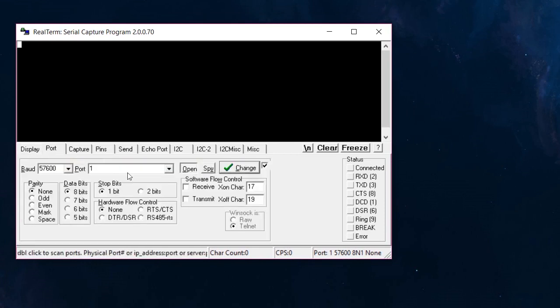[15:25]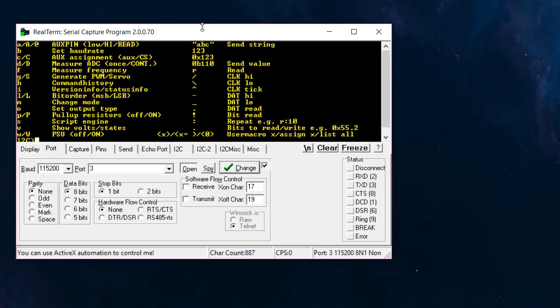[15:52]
So the first thing I'll do is I'll switch from ASCII to ANSI. This is what the bus pirate expects. And then I will tell it which port to use. I happen to know from just a little bit of trial and error and experience that this number 3 device is the device that the bus pirate lives on. So if I send a question mark, ooh, that's not looking good. Oh, I didn't set the baud rate appropriately. The baud for the bus pirate should be 115,200. So I'll set that, hit change, hit question mark. Yeah, so now this is the interface for the bus pirate.
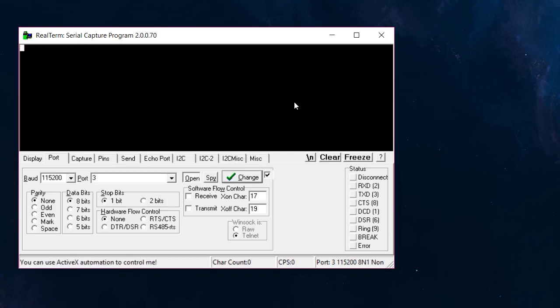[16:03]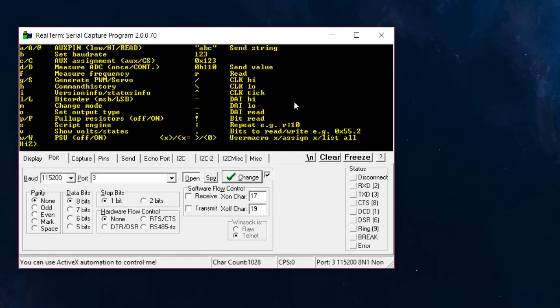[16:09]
And the bus pirate's pretty cool. So I'll give you a quick demonstration of how we get started. The first thing I'll do is I'll just reset everything. So, that's not looking good. Let's clear. So a pound will reset everything. And then a question mark will give us the main menu, which will show all the things we can do.
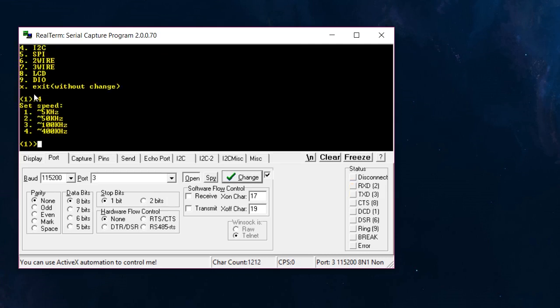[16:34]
Before I do anything, what I want to do is tell the bus pirate that we intend to communicate with I2C. So I'm going to do this M key to change the mode. If I push M, it'll say, what do you want to do? UART, I2C, SPI, etc. Let's do I2C, so number 4. And then what speed? This doesn't really matter that much. I have a relatively short run of cable, but just for convenience, I'll pick 3. So we're going to run I2C at 100 kilohertz. And that's ready. That's all it takes.
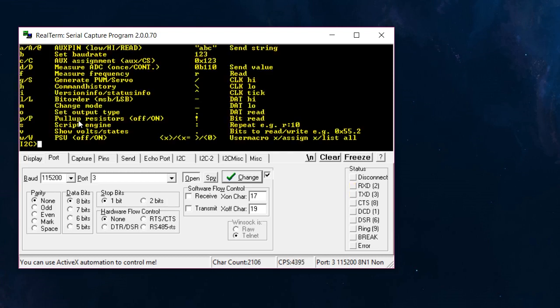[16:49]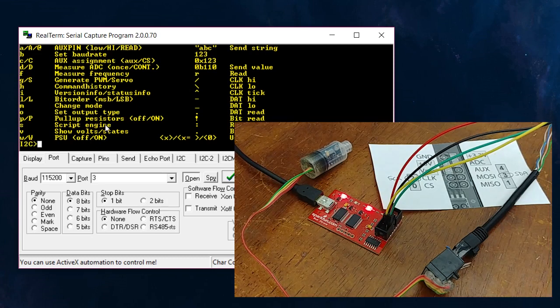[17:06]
So nothing's happened so far. I'm going to go to the main menu by hitting question mark, see what we have available. The first thing I need to do is I need to enable power to the device. So by default, the device is powered off. I can use this lowercase w or uppercase w to turn the PSU on or off, and that will engage or disengage the 5 volt and or 3.3 volt lines. And I have this hooked up to the 5 volt line, so we'll hit a capital W and see what happens. Okay, and the light came on. That's a good sign. That means that we have power on our board.
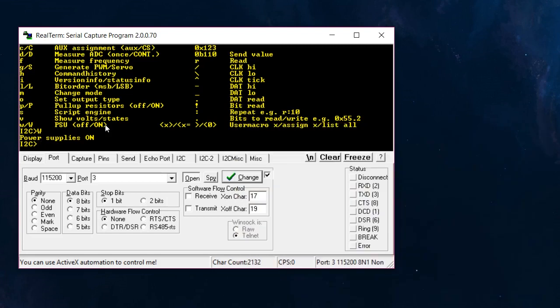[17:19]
So the next thing we need to do is enable the pull-up resistors for I2C. This might not be necessary if there are already pull-up resistors on the board, but in this case, it doesn't hurt to add an additional level of pull-up resistors. So let's do capital P, pull-up resistors on. Great. And if that failed, it would have actually given us an error. It would have said, hey, we weren't able to pull up this data line, etc. So far, so good. The next thing I want to do is scan for I2C addresses.
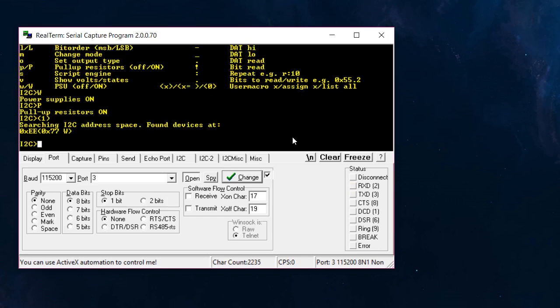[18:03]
And I can do that using this command here. This is the number 1 in parentheses. And all of this I2C walkthrough can be found on the Dangerous Prototypes website. They're the group that makes the Bus Pirate, and they have some good documentation there. So if I do that, we see all the I2C devices, and it only found one on the address 0xEE. So from here on, we're going to practice talking to the device on 0xEE.
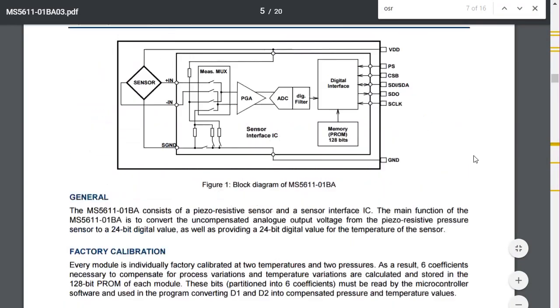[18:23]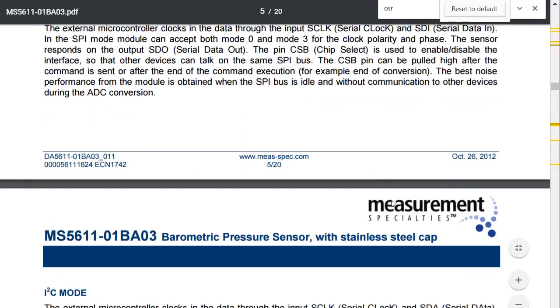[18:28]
Okay, so the next step is going to be to go back to the datasheet and take a look at how we interact with this thing using I2C. So let's scroll down through the datasheet, see what we can find. All right, there are only 5 basic commands: reset, reading the program memory, D1 and D2 conversion, which through reading the rest of the datasheet, you eventually realize D1 and D2 are temperature and pressure readings. And so the conversion sort of makes the measurement and loads it into the program memory of the MS5611.
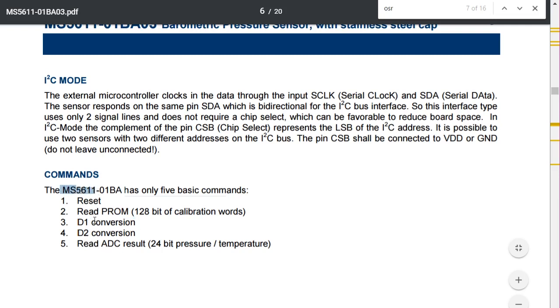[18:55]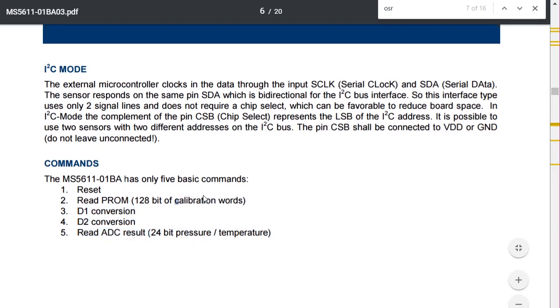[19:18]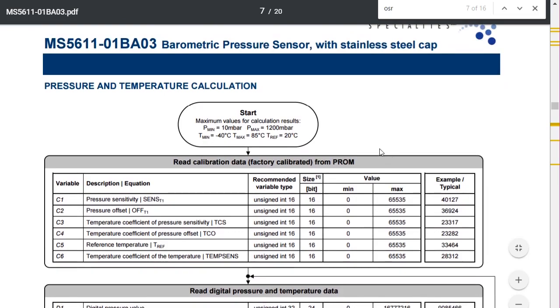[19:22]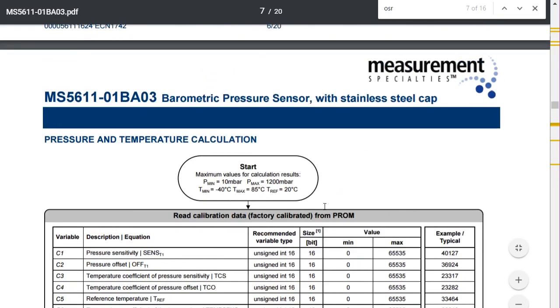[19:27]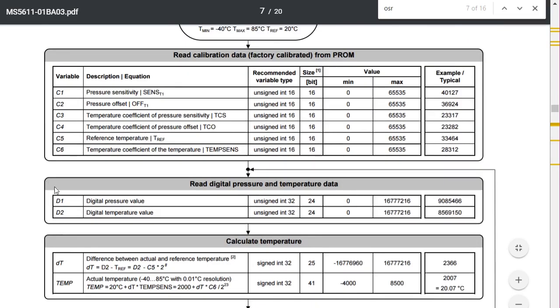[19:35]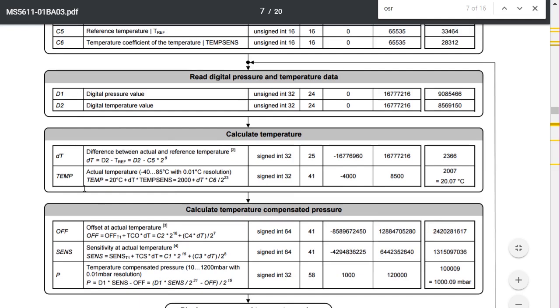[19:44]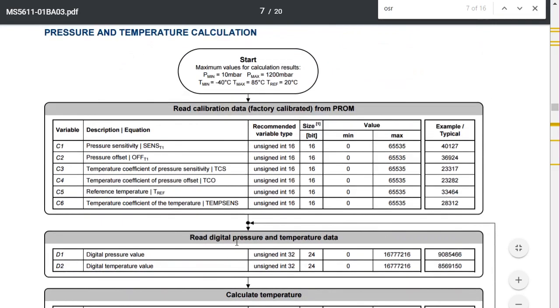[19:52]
This is the formula of how to get all of the readings from the factory programmed calibration variables and combine them with the D1 and D2, which is the pressure and temperature values. I guess I said those backwards earlier. And mix all those together to eventually get temperature compensated pressure down to 1/100th of a millibar resolution. So these are the 6, C1 through C6, and I think in the earlier part of the video you saw this being displayed on the screen. There, the pressure sensitivity, offset, temperature sensitivity, offset, and then reference.
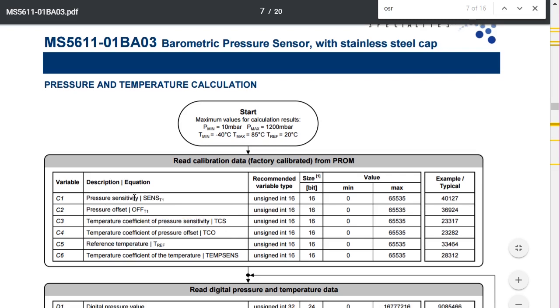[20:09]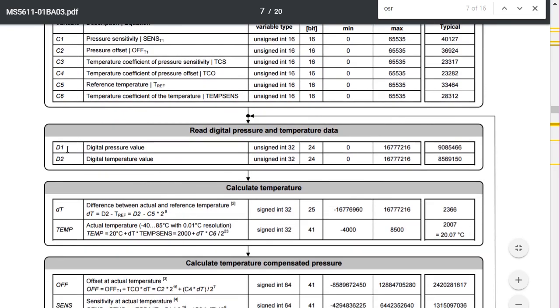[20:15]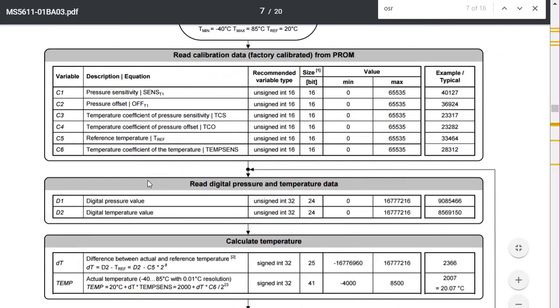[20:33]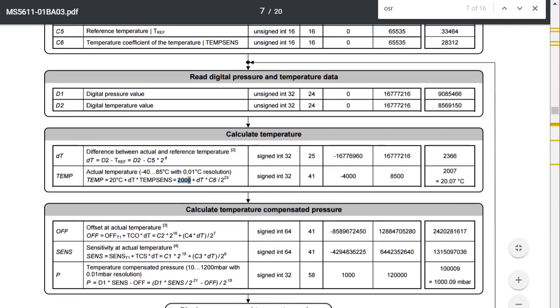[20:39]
You know, it doesn't actually really matter the details of that. Just assume that we can read these six values from the memory. We can read these two values from the memory using a conversion, and then we really just use these equations right here to get a calibrated temperature reading. So the first thing we do is we calculate this dT value, and it's pretty much D2 minus C5 times 2 to the 8, where this is C5 and this is D2, so that's pretty easy. And then the actual temperature is 2000 plus this dT times C6 divided by 2 to the 23, and if you do all that, you'll actually get the temperature as a number with 1/100th of a degree Celsius resolution.
And then we can use that temperature, plugging it into these formulas to get pressure. And we don't really need to go through in that much detail. C2, that's just from up here. C2 times 2 to the 16 plus C4 from up there times dT, which is here, all divided by 2 to the 7. That'll give us our actual offset temperature. And then we use this. It's going to go down in this formula, but we also need this sense actual temperature, which is calculated with this. So C1 from above times 2 to the 15 plus C3 from above times dT, which we got up here, all over 2 to the 8.
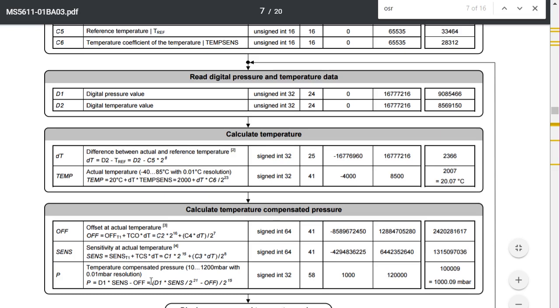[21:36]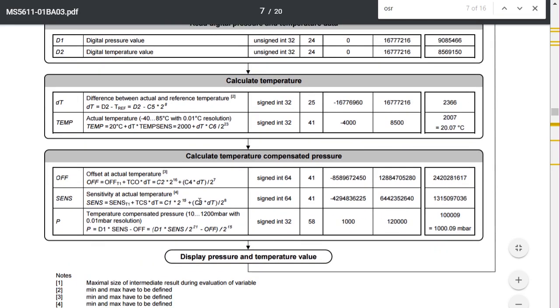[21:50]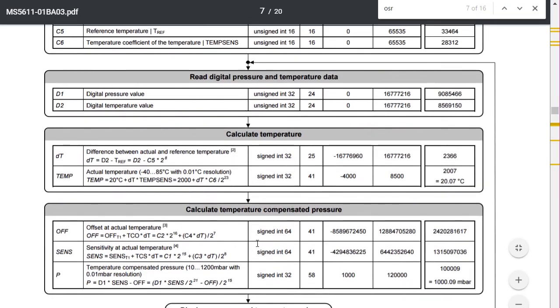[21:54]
Okay, it's pretty much plug and chug, nothing too crazy. So D1, digital pressure value, times sense, which is this, over 2 to the 21 minus the off temperature, all that over 2 to the 15. And yeah, if you do all those things in order, read all these numbers correctly, and then just plug and chug, you will get an accurate temperature and pressure.
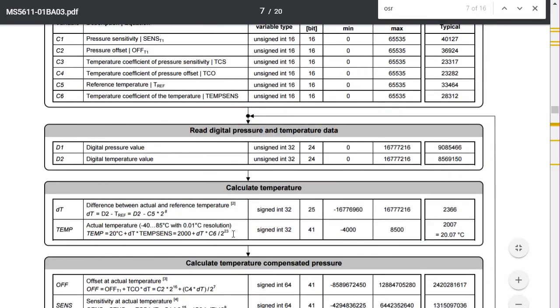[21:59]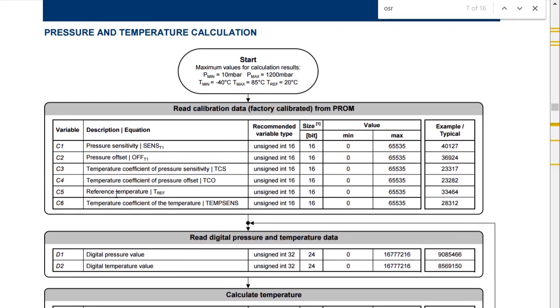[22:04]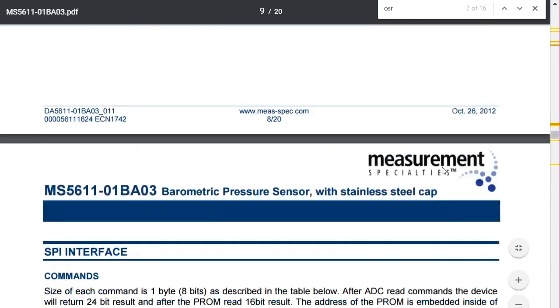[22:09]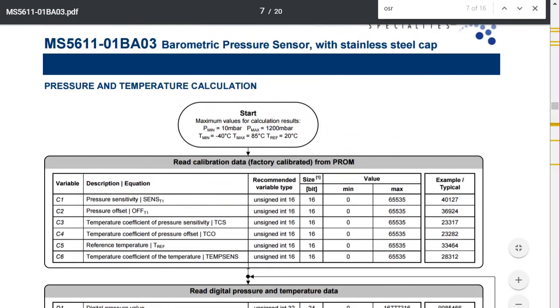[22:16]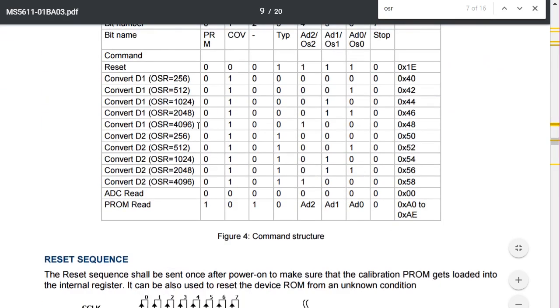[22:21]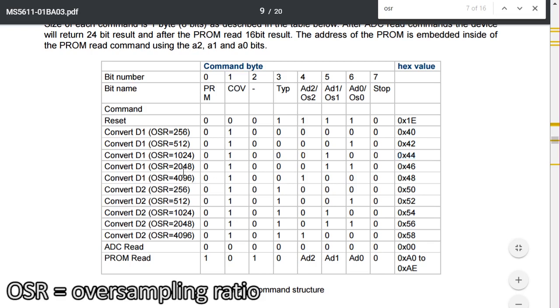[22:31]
So let's see if we can start interacting with the microchip using the Bus Pirate to pull some of these C and D values. So we'll scroll down a little bit more and see. Ah, here we go. Okay, so this tells us how we actually get our D1 and our D2 values. So remember, D1 and D2 are pressure and temperature. And there are a few different commands. So this is the command, and they show it in hex, to get D1 and D2 with these different OSR values. The OSR values are different levels of precision.
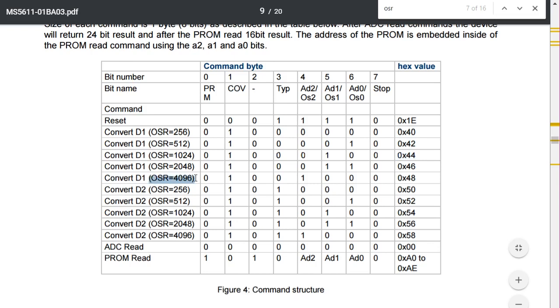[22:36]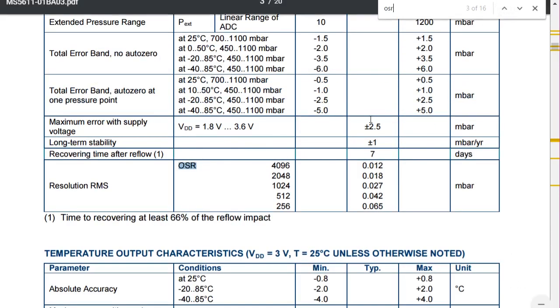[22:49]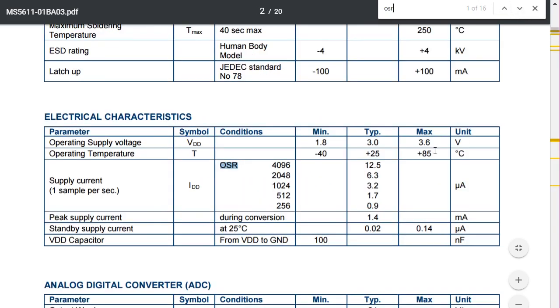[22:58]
The highest level of precision and accuracy requires the highest OSR value, and it also requires the greatest current to measure. So let's just look where else in the datasheet it talks about OSR. Here you go. And also it takes a little bit more time. That's important to note. So if you need to do a really fast, oh, here we go.
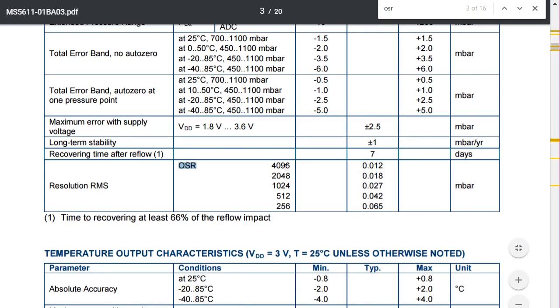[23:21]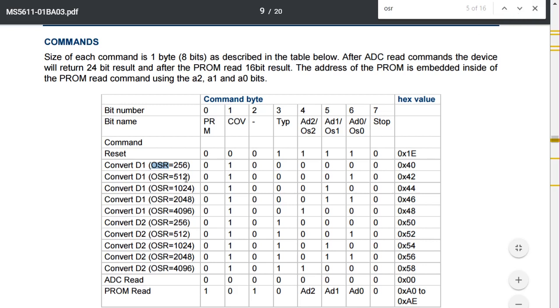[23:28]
So a larger sample OSR requires a greater degree of current than a slower one. So if you're operating on battery power, you only need a quick and dirty measurement. You probably don't need to use the full OSR. And what else do we have here? So the resolution also is more precise with a higher OSR than with a lower OSR. But since we're running on wall power or USB power, it doesn't really matter. So let's just assume we're always going to use the highest OSR value.
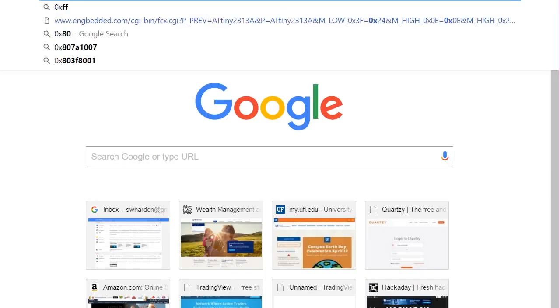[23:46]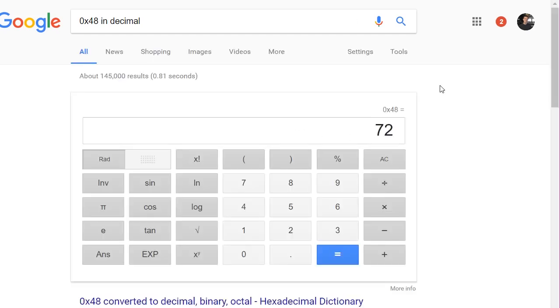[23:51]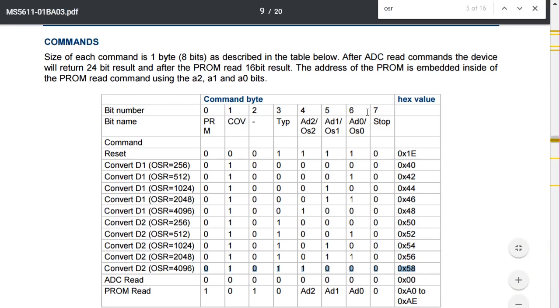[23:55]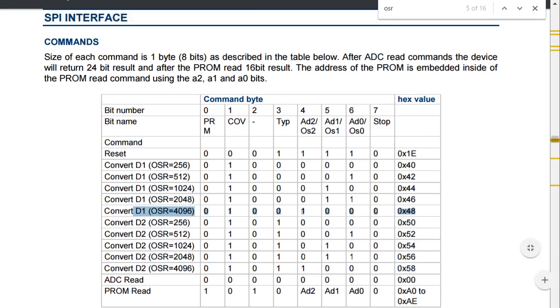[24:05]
So what we are really interested in is this D1 value and this D2 value. And the number is 0x48 and 0x58. So 0x48, let's just see what that looks like. That's 72. So we could enter hex commands directly into the Bus Pirate, but actually, let's go ahead and do that. So we decide we want 0x48. So we're going to try to read D1.
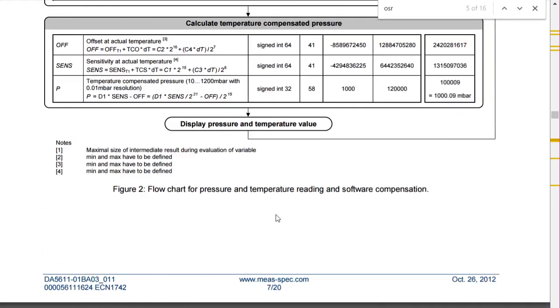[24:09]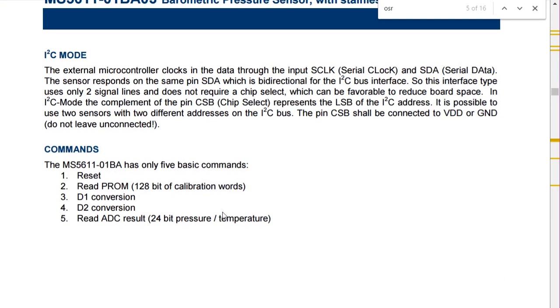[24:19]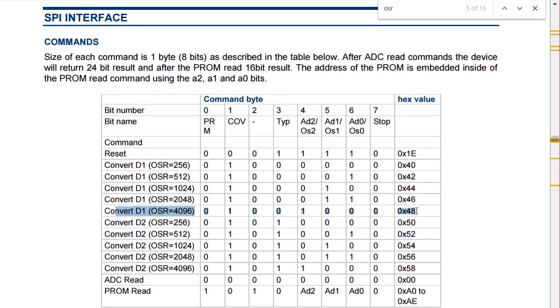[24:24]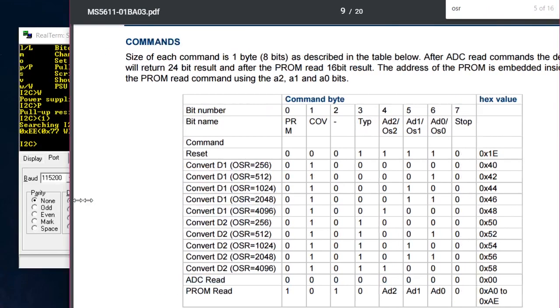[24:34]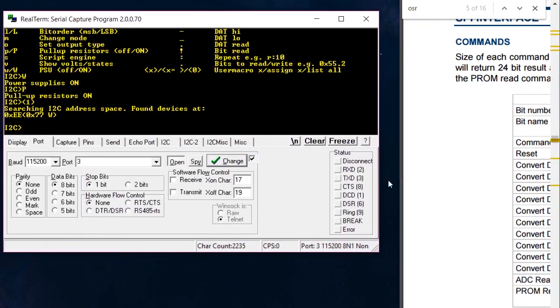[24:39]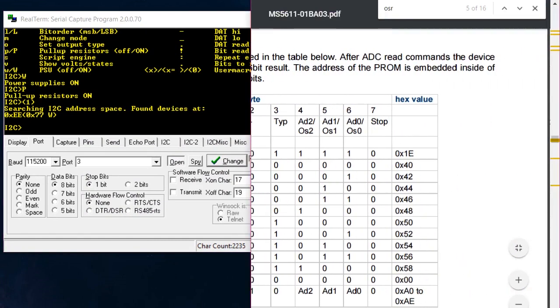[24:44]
So this is important. Remember earlier, let's go back up, we have to do a conversion and then reading. So if we're going to read the pressure, we have to do the conversion first and then the reading. So this will just do the conversion. So 0x48 should do conversion, and then we have to do the reading, which is ADC read, which is just 0. So that's pretty easy. So let's just slide this over here. Hey, that worked pretty well. Good enough.
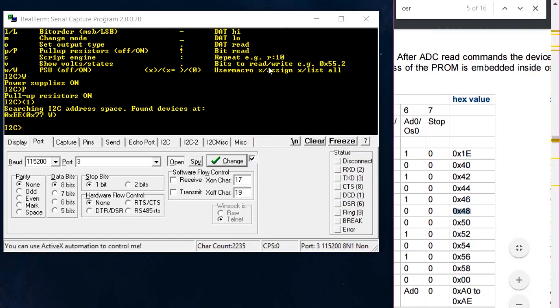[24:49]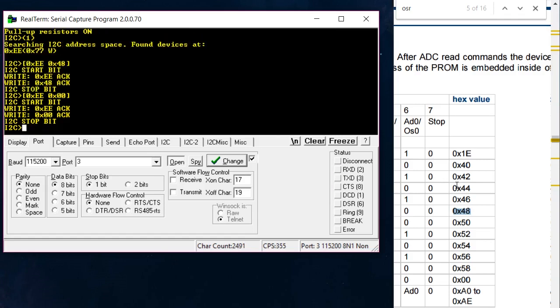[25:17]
So what was that? 0x48. Okay, so we're right back where we left off. I'm going to try to send a command to this 0xEE device. And the way you do that is you start by saying 0xEE, and then you can send the command. So in this case, we're going to do 0x48. That will do the conversion. Cool. So 0xEE, 0x00. That should do the ADC read. So now it's ready to be displayed.
And then to actually read it, we send, what is it? I think it's like 0xEF R:2. Yeah, so these are our two values. So these two values represent, I guess we needed 24-bit, so we need 3. Okay, so they reset. So I'm going to push the up arrow and do these all again. Cool, so here are our three values that we got out.
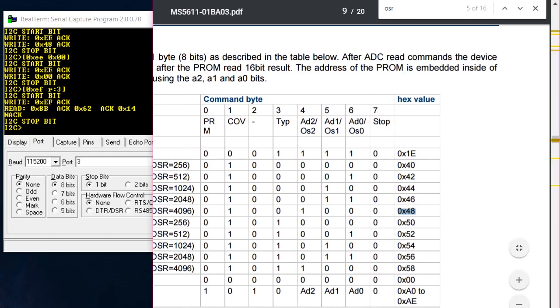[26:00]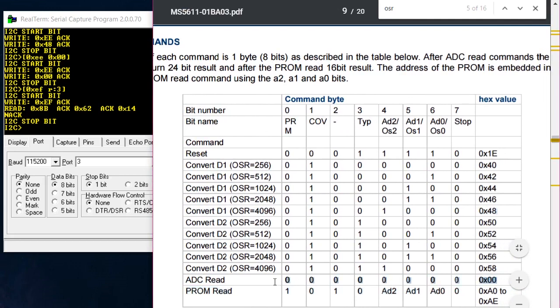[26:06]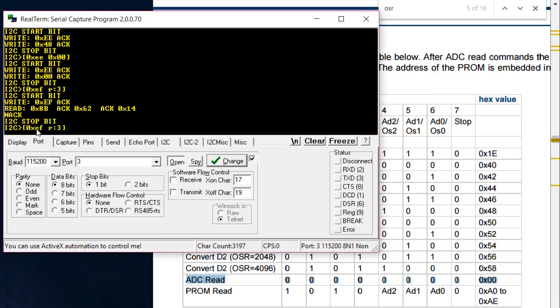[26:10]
So again, we started by sending 0x48 to tell it to do a conversion from D1, and then we sent 0x00 to tell it that we want to do an ADC read, and then we actually used this 0xEF command, and it's always the address plus 1 to do a read. We used the 0xEF command, and then we read 3 bytes in a row, and these are the 3 bytes, 0x8B, 0x62, and 0x14. And my suspicion is that if I read them again, they'll be different numbers. So let me try again. 0x48, 0x00, read 3, and yeah, indeed they are.
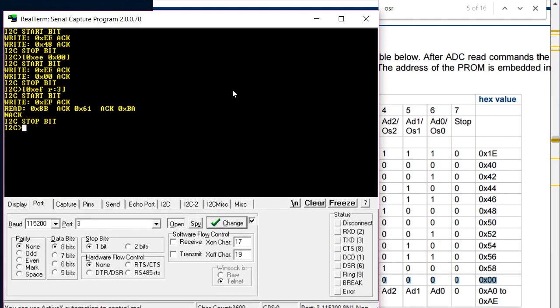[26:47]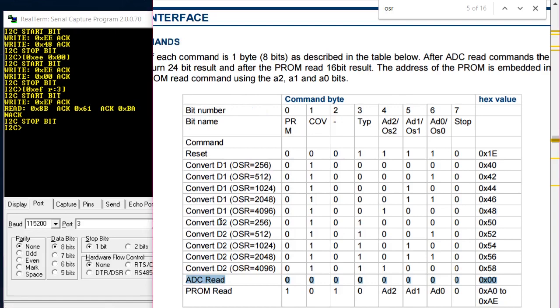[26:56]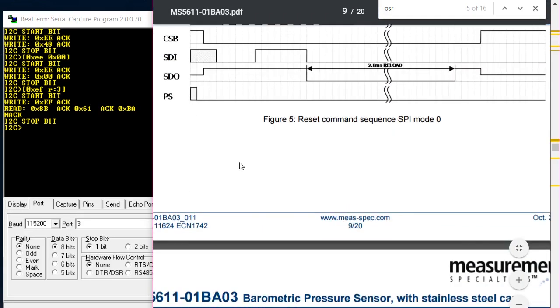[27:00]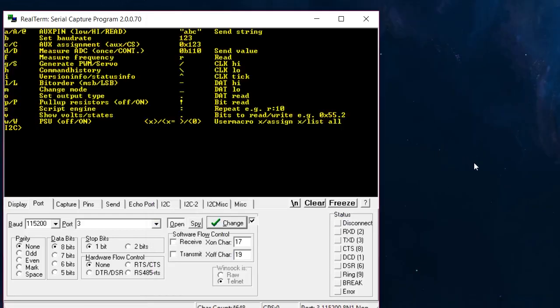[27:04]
So I wonder if we can expand this a little bit. I think I might have lost what it was before, but the bottom line is that these numbers are a little bit different. So we are able to read D1 that way, and we can read D2 the same way. So that's pretty easy. I'm going to go back to the main menu here.
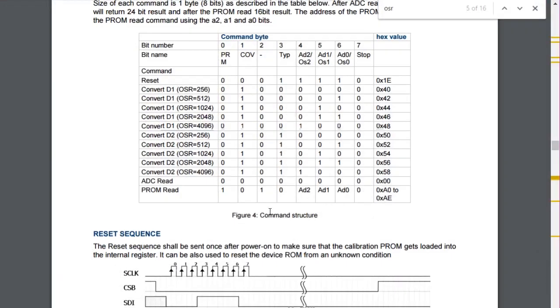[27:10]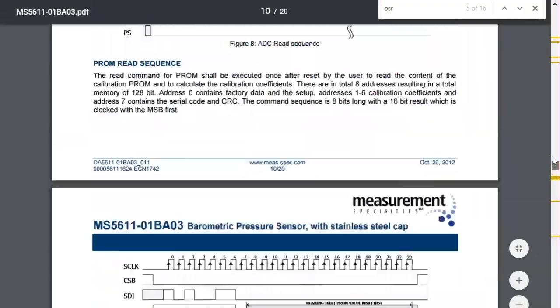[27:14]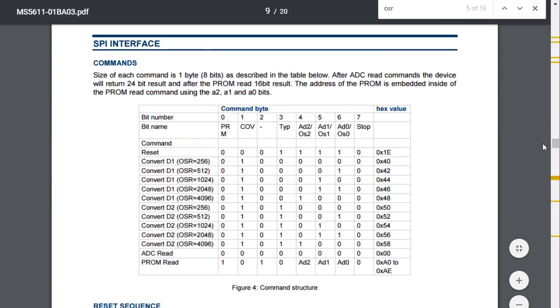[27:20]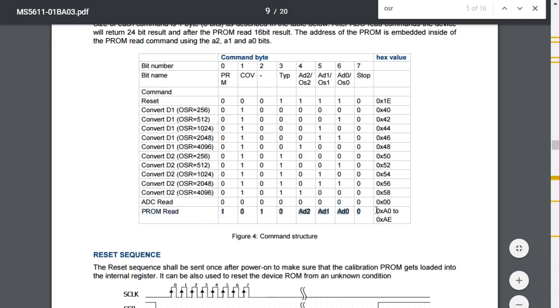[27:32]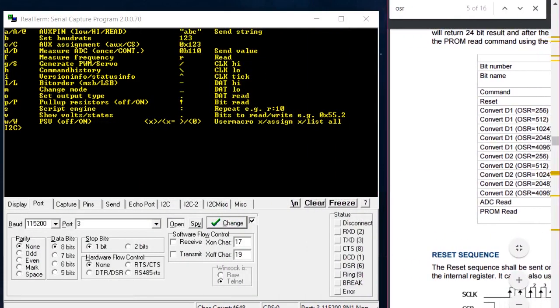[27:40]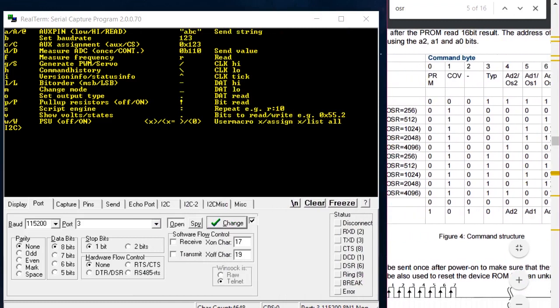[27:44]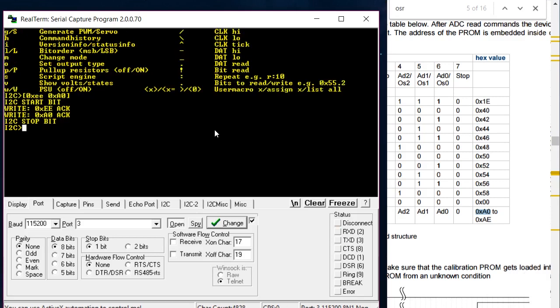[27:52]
And I guess just to be thorough, let's demonstrate how we can read the program memory. So remember in these formulas, we have these C1 through C6 values. Those can be read with the program ROM read. And we can address those 6 values by changing these 3 bits in this byte command. So we'll start just with A0, I guess, and see what happens. So it should be as easy as telling it that we'll send it A0, and then we'll just read a byte. So 0xA0, and then instead of reading 3 bytes, we'll read 1 byte, and there it is.
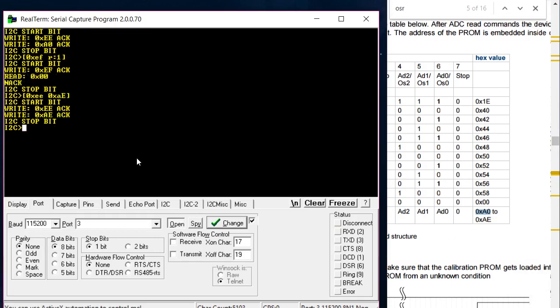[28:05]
So I don't know if that worked. Let's do the other end. Let's try AE and see what that looks like.
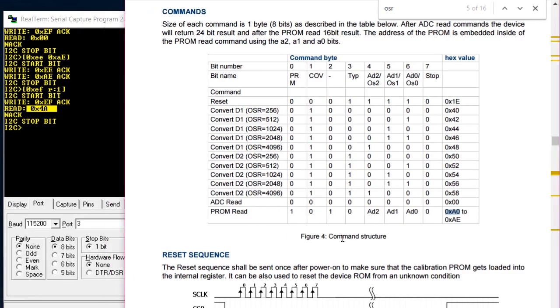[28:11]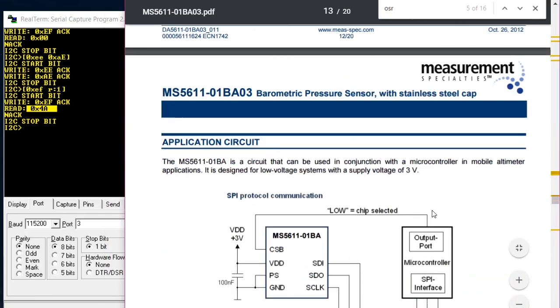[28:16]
Yeah, okay, so we got it. We got to read. My guess is that if all of these are 0, 0, 0, it's probably not going to be a meaningful read. So let's take a look. Yeah, that's a 16-bit reserved for the manufacturer.
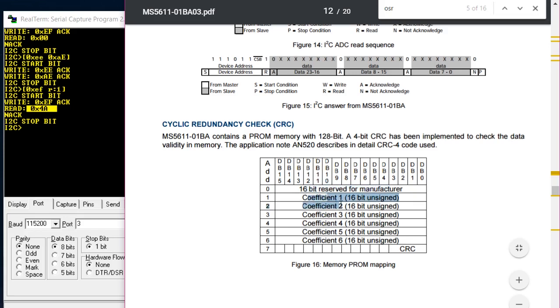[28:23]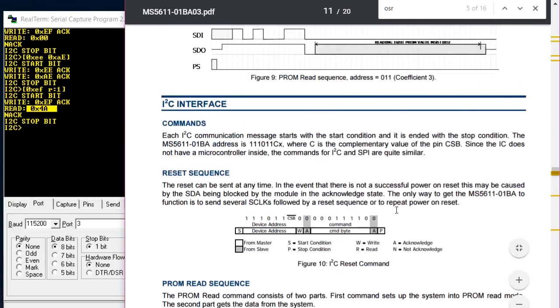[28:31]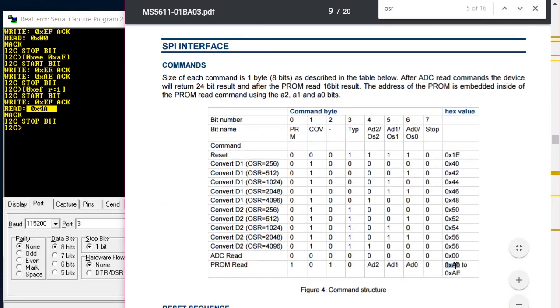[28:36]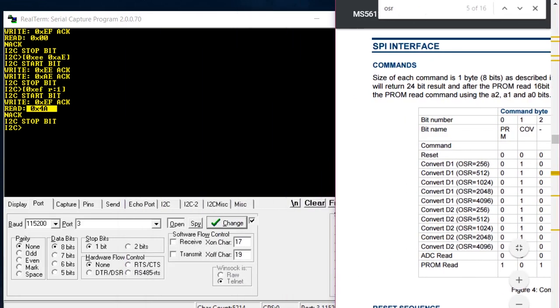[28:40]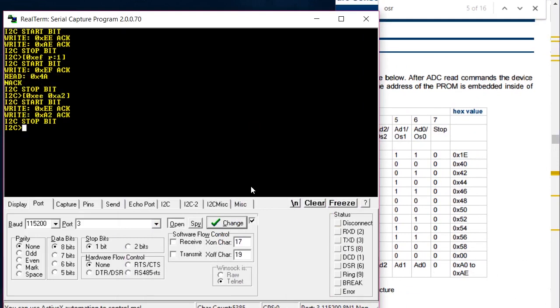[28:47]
And actually, shoot, let's take a look again. These are expecting 16-bit unsigned integers, so we should be able to read 2 bytes. So let's try to read this ADD1 value. We'll go back here. A0 was the manufacturer reserved, so we're going to want to do a couple above that. Instead of A0, we'll do A2, and then we will read 2 bytes. And there you go. We got AD and 0x91.
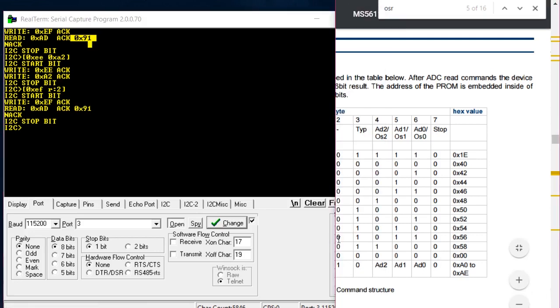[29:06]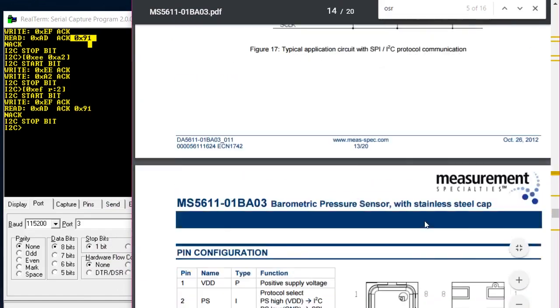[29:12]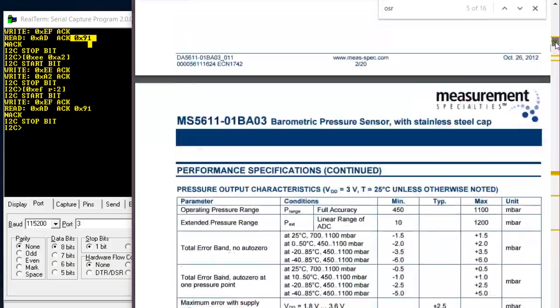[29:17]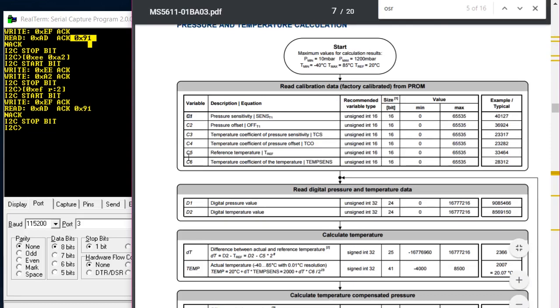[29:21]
And I bet if we do that twice in a row, we will get the same result. And yeah, as expected, we do. So this is how we can read the program memory that helps us get our values between like A2 and AE, which are the 6 calibration values, which will eventually get saved in the C1 through C6.
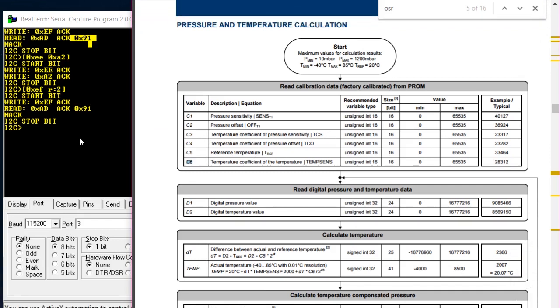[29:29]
So I think we've gone through and shown how we can use the Bus Pirate to make a conversion to pull data from the chip and display it through this serial interface here. So the next step will be to demonstrate how we can do this repetitively and kind of automate it to capture data and log data in real time with Python.
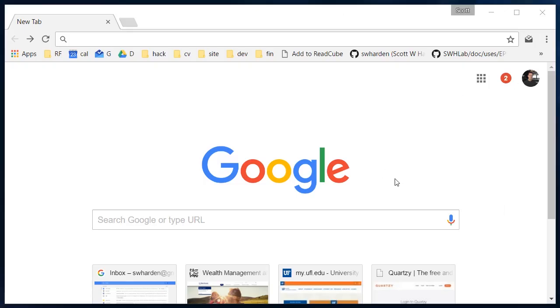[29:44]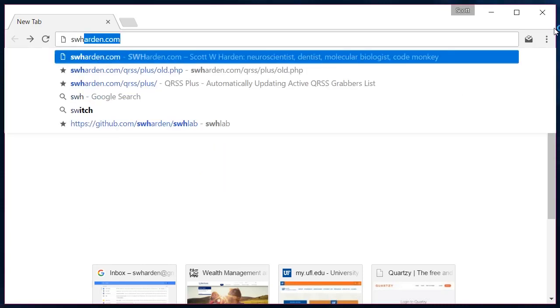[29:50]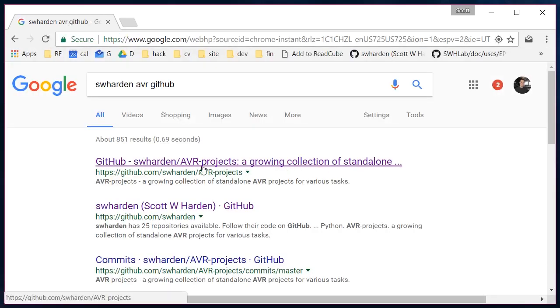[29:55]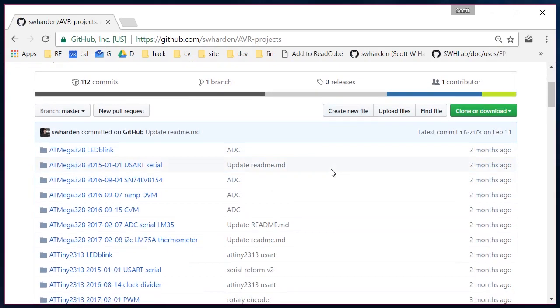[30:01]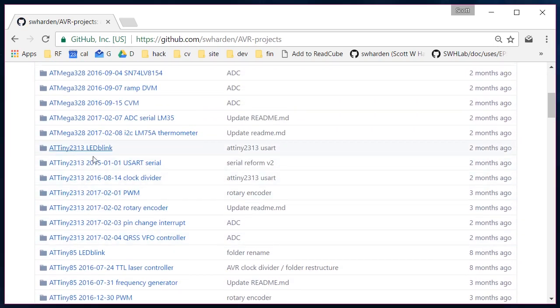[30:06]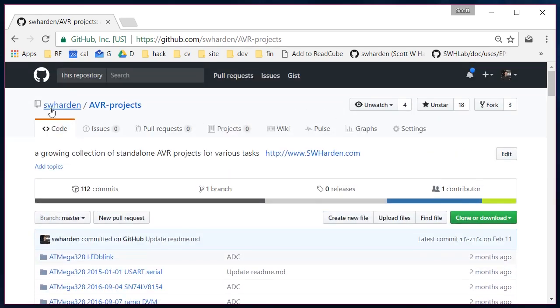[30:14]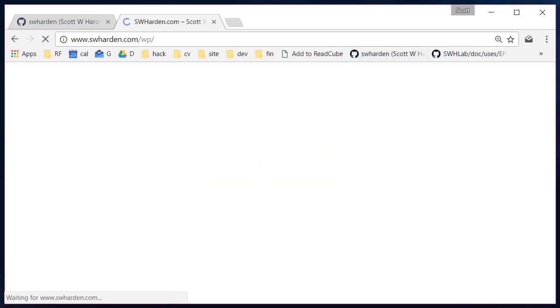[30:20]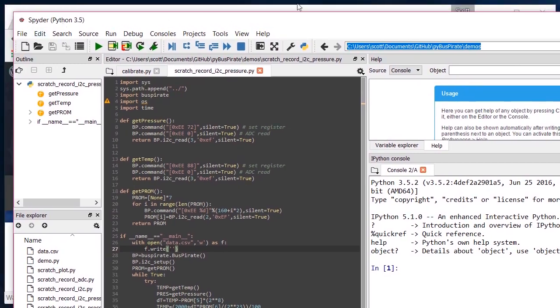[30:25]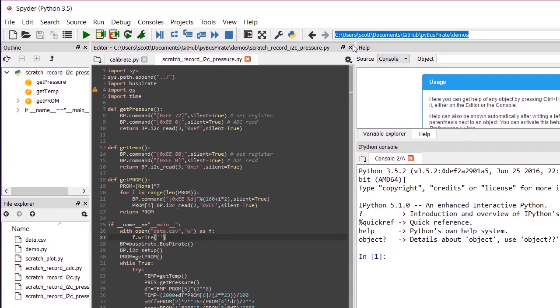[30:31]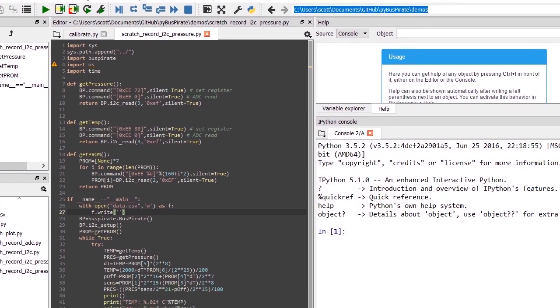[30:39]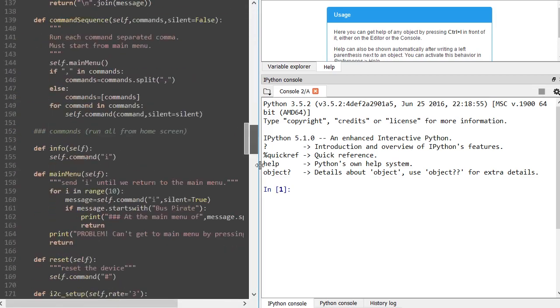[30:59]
So for now, I'm going to open my editor. I'm using Spyder, and right now I'm on a Windows system. I can't remember if I'm using the WinPython distribution, Anaconda, or if this is just a base install of Python. But you know what, it doesn't really matter. This is just Python 3. And so I wrote a library called Bus Pirate. I might be changing the name of it. I don't want to cause any disagreements as to who owns the rights to Bus Pirate and all that. But for now, let's say I wrote a library called Bus Pirate, and it lets us easily interact with the Bus Pirate using the serial interface and PySerial and all of that.
So remember earlier we used RealTerm to send these commands. So 0xEE, 72. 72 is 0x48. So this was like a convert D1, and then this was read the ADC, and then this command was to actually pull 3 bytes. And so this Bus Pirate, oh, here, yeah. This bp.i2c read is a function that I wrote to let us read 3 bytes from the I2C interface.
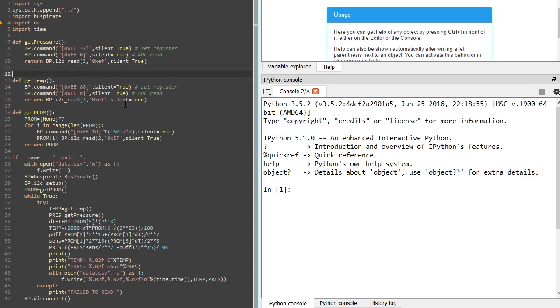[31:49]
This isn't necessary to go through all this detail, all this code. I just want to show how you can use the Bus Pirate in its full text serial mode to pull data that gets logged. The Bus Pirate does have a cool binary mode, but some of the older versions have, people have indicated, some glitches or bugs in there, and it's not always intuitive to know exactly how to interact with it. So since we already know how to interact with the Bus Pirate just by sitting at the keyboard banging in these commands, it's easy enough just to use PySerial to send these commands to a serial port.
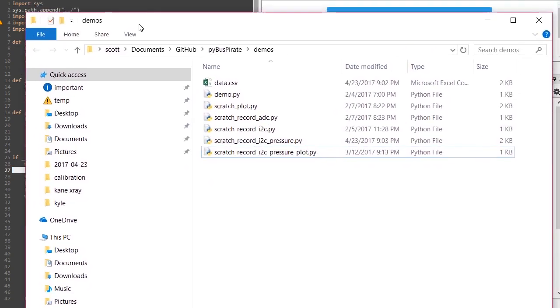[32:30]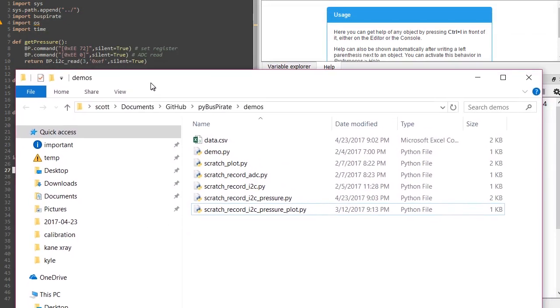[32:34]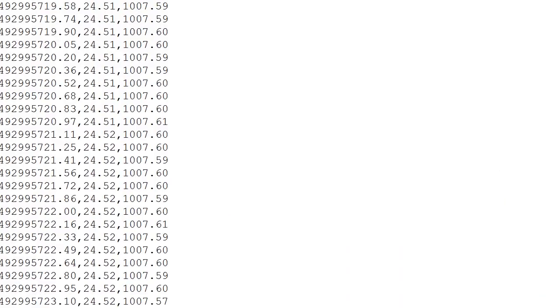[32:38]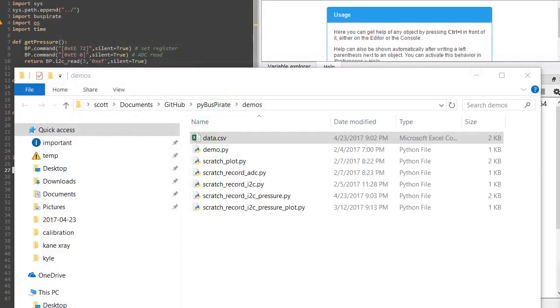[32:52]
So this program actually starts here. It opens a file which is going to live here, and our goal is just to log data and temperature. So let's take a look at what that looked like. The output will look like this. Here's a timestamp in seconds. This is temperature in Celsius, and then this is pressure in millibar, I think. So let's step through this program.
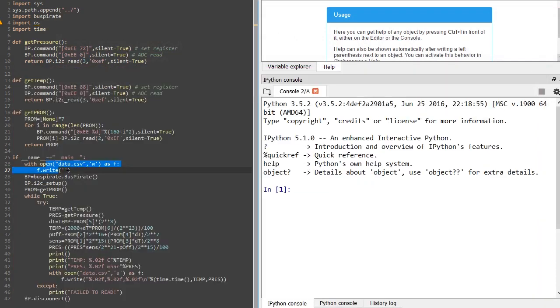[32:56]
This opens that file, gets ready for writing. This initializes the Bus Pirate. This will also connect to it and make sure it can talk back and forth and that type of thing. I2C setup is what we need to do to turn the power on, so capital W, raise the pull-up resistors, capital P, and also set the mode to I2C, probably set it to like 100 kilohertz or something like that. So that's what that does.
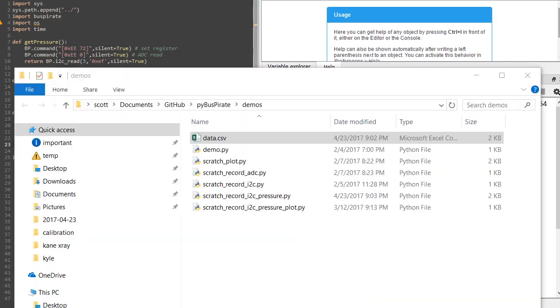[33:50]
And then prom gets the program memory. It runs this function up here, and it just pulls the first 7 bytes from this memory address. So exactly what we did earlier by hand, it just does automatically, and it returns an array of the first certain number of programmable memory values. So let's see, I'm gonna go ahead and load up the data sheet again.
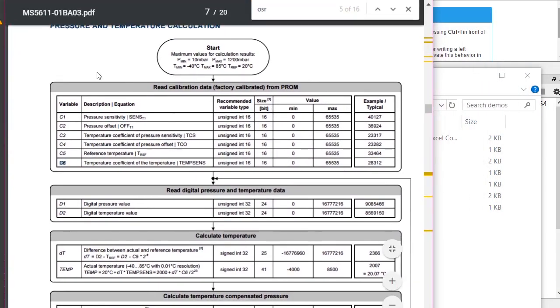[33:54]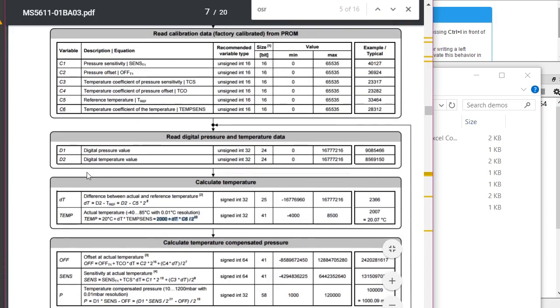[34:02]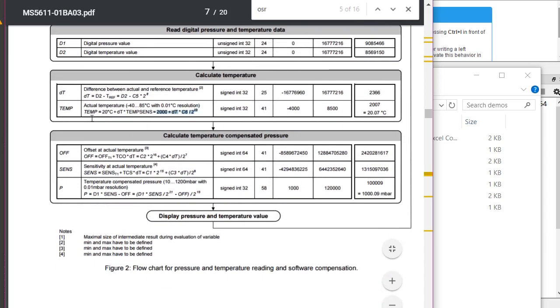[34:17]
Okay, so here's that data sheet. Remember when we were going to calculate pressure and temperature, we used these values, so like D1, D2, and the C1 through C6. The program that we're looking at now reads all of these 6 values, and it saves them for later, because these will never change. And then it reads D1 and D2 over and over, and then it runs this math here to calculate the actual values. So let's look at what that looks like.
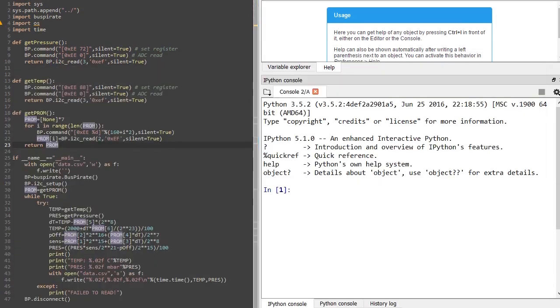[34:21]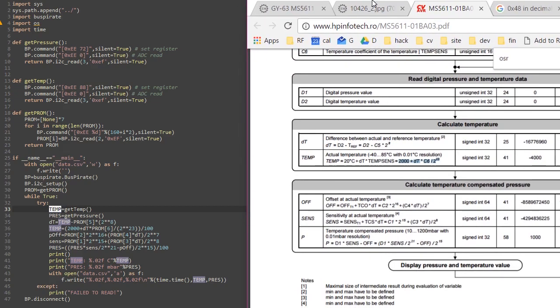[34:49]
We only once have to get the program memory, and then while true means it'll do this forever, and it really just does this little block here. So it gets the temperature from get temp, which is, again, just like we did manually with the Bus Pirate. Send this command. So prepare to get D2, make the read 3 bytes, and then return its value. So get the temperature, get the pressure, and we can do this at the same time here.
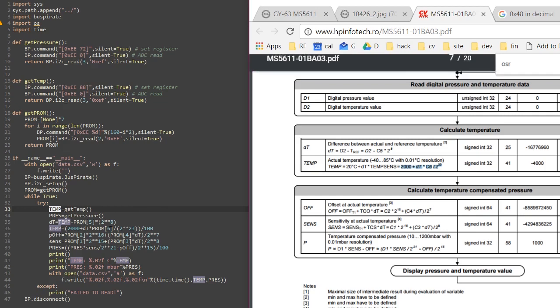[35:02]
DT is something that we need. You get DT here. And then temp, something we need, temp here. These are just straight from the data sheet. And at the very end, we have our final temperature and our pressure, and they should be accurate.
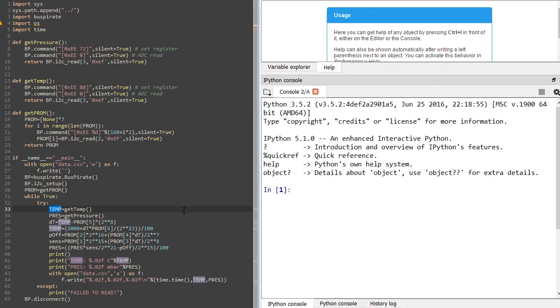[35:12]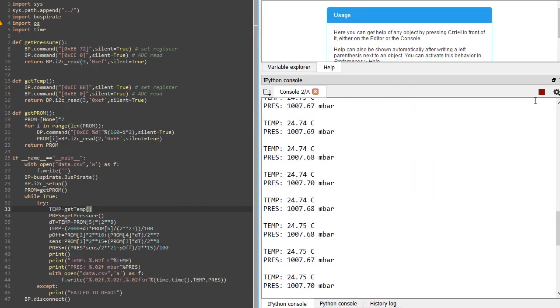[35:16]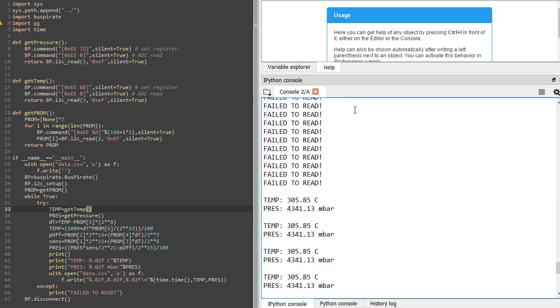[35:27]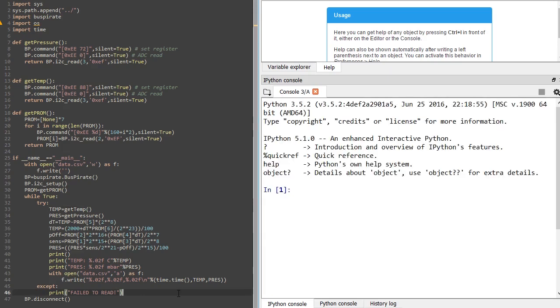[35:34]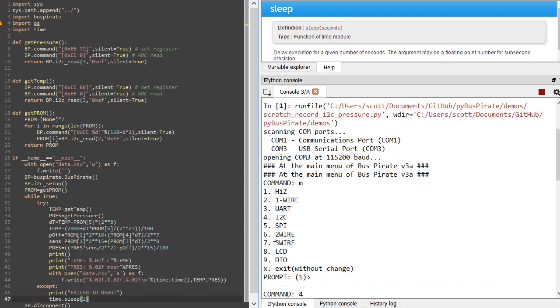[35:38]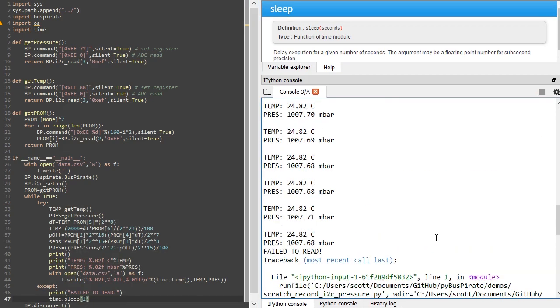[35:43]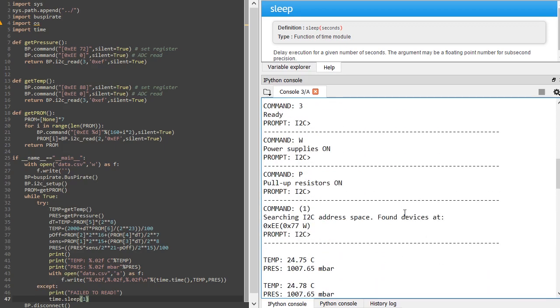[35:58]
So I'm just going to go ahead and run this program, and it just starts going. Now I'm going to click stop so we can scroll back up. Oh goodness. I'll do control C. Stop. I think I took out something that we needed. So let me add that here and see what happens. Okay, cool. So I was able to use control C to stop it. But yeah, it just continuously reads temperature, pressure, temperature, pressure, temperature, pressure. And I'm not going to go through the effort of like squeezing the tube, but you know, take my word for it, these numbers change with temperature and pressure.
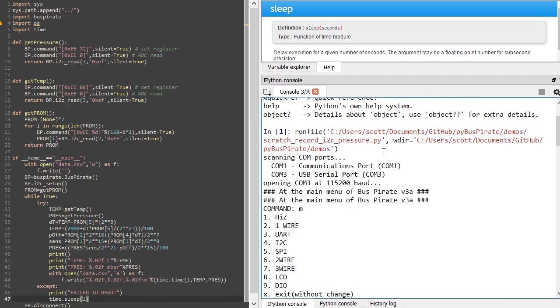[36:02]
But let's scroll up a little bit and see how this thing initialized the Bus Pirate. So it automatically scanned the COM ports. It found one that looked like it had a Bus Pirate on it. So it automatically opened it. It knows the baud to use, and it tried the M command. Okay, so we started here. So it's doing this I2C setup. So it knows to run the M command.
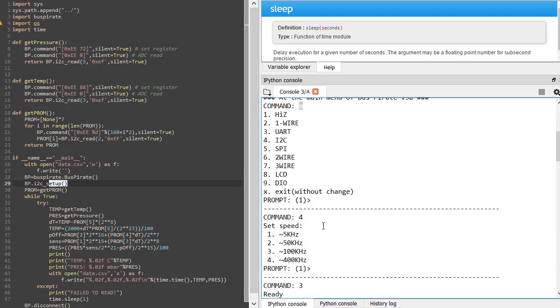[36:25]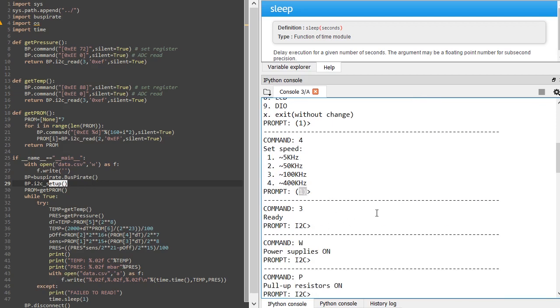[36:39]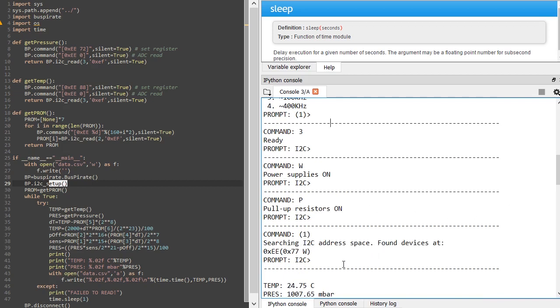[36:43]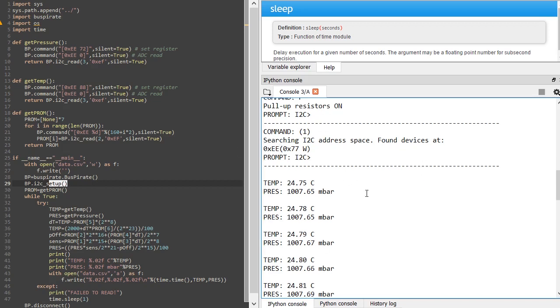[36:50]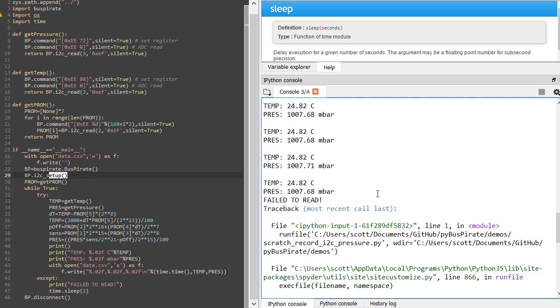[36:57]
And then, yeah, this is a little bit out of order, but I think this is the prompt, and this is the command that was run, and then this is the output. So then it's going to say number 4, which is I2C. Pretty much it just goes through and automates what we would push if we just sat there pushing buttons. And yeah, see, it found an I2C address at 0xEE. And then the rest isn't really being shown, the commands go back and forth, but really it's exactly the same. It types these commands, and then it uses some text parsing to pull these numbers from the output.
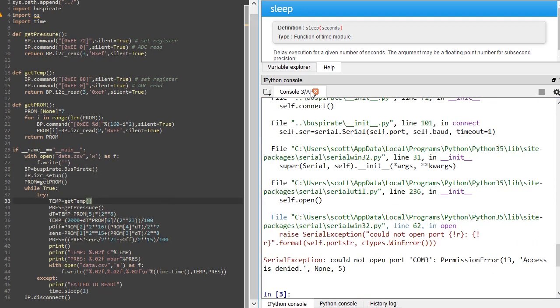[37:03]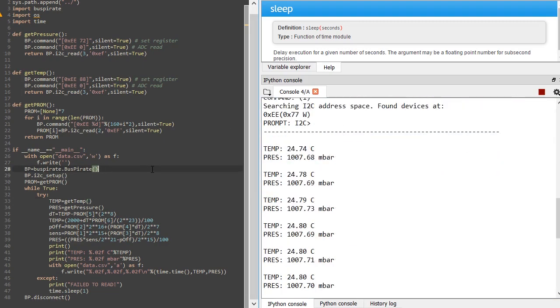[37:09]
So I'm going to let this run a few more times. And actually, I will take this opportunity to hold the temperature sensor in my hand. And as I'm holding it, you should see this number start to rise. And I'll also try to put a little bit of pressure on it just by pushing my thumb in the syringe a little bit. Okay, now I'm going to let go of it. And it's a kind of large thermal mass, so it doesn't surprise me that it's still heating up after I let go. But that's enough just to show what we're trying to show here.
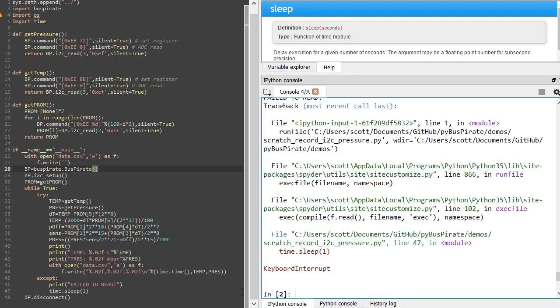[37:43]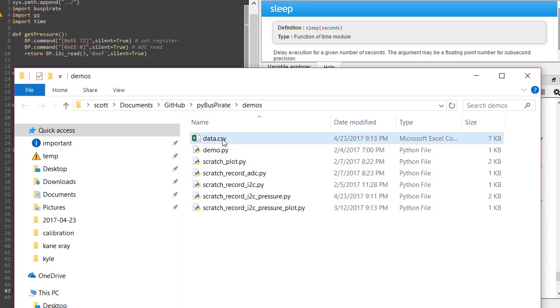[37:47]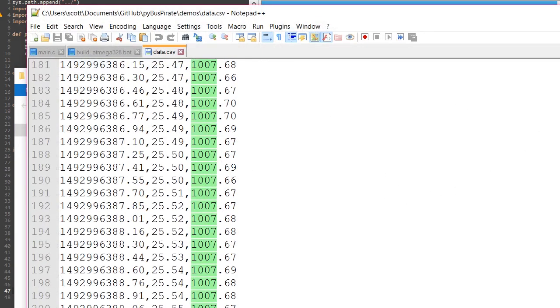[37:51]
And let's see if it saved it. So rather, I guess I can go ahead and open this. And it has about 200 lines in here, so that seems right. And it was modified at this time.
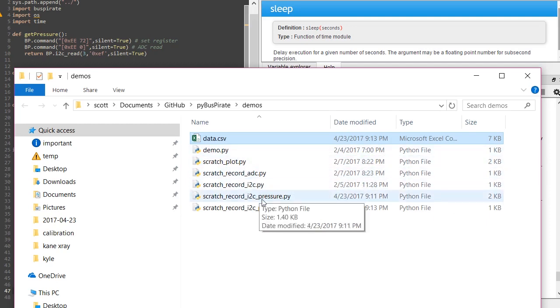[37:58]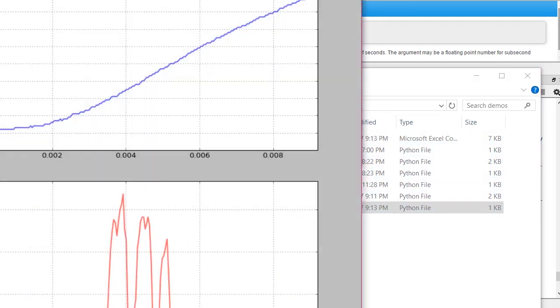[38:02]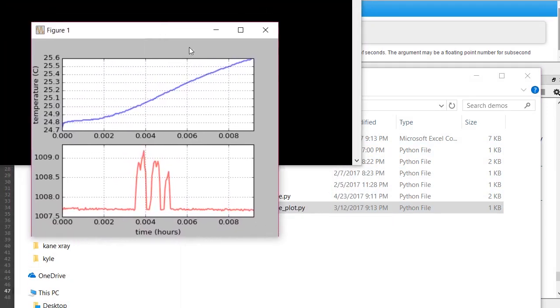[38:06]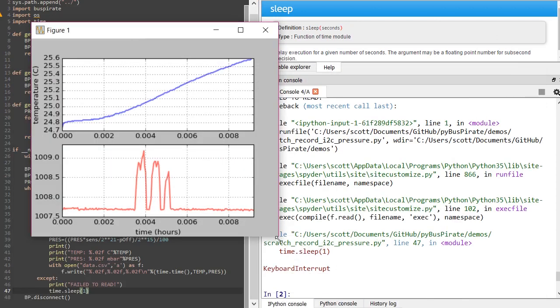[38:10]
So I also added another program, this pressure plot. And this program just reads the values from this CSV file. And on top we have the temperature, and on the bottom we have pressure. You can see the pressure spiked when I pushed my thumb in and out of the syringe. And somewhere around here is where I grabbed the whole syringe and it started heating up.
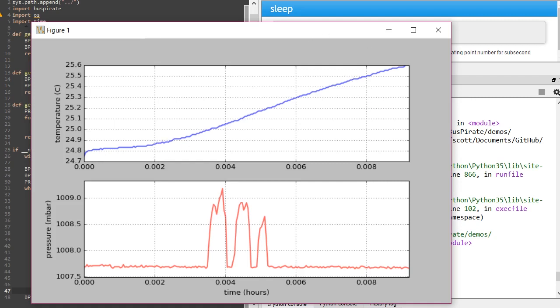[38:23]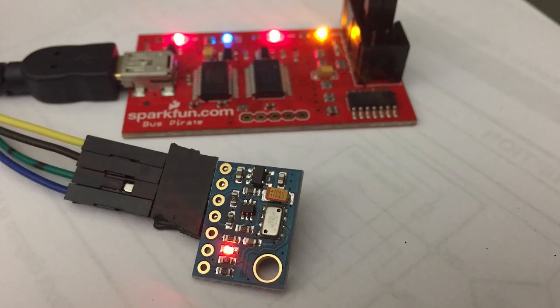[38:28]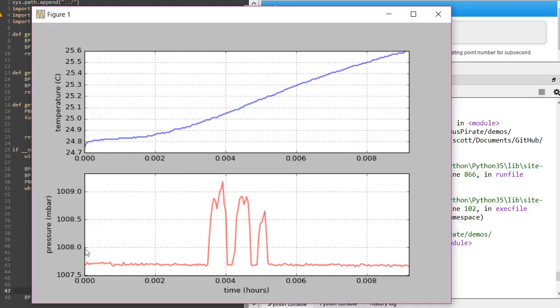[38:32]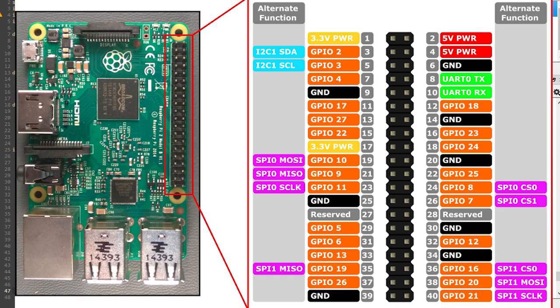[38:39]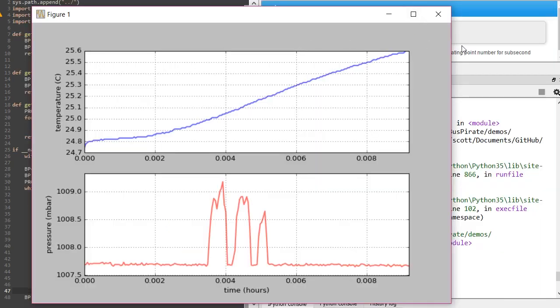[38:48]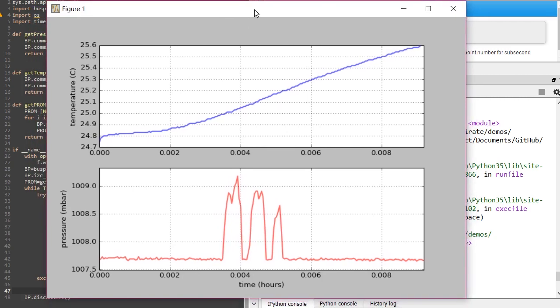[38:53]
So this is a cool way, using nothing but the breakout board and a Bus Pirate, we can get really high resolution, precise temperature and pressure data straight into a computer. And this would be cool to do with something like a Raspberry Pi. They actually have I squared C pins on the header of the Raspberry Pi, so you wouldn't even need a Bus Pirate. All you would need is this little pressure sensor breakout board. So now that we've seen how this works, let's bump it up a notch and interface this directly with a microcontroller.
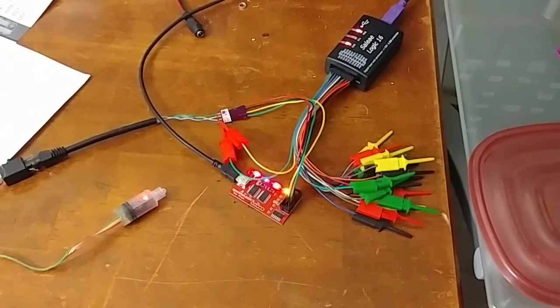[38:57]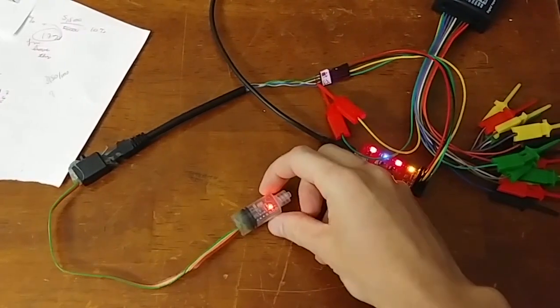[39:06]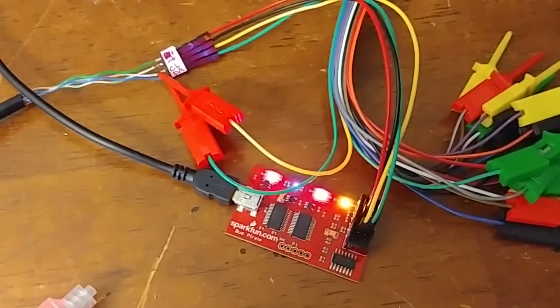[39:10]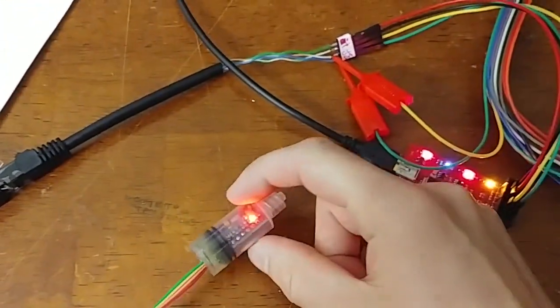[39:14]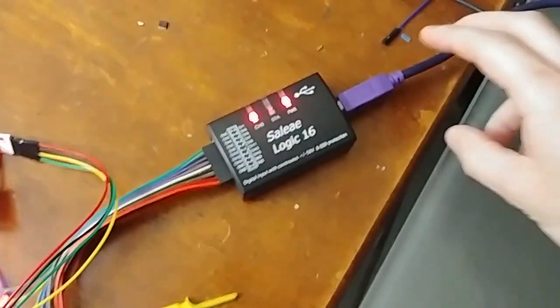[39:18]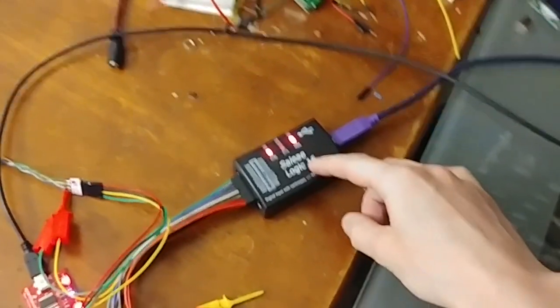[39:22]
Actually, before we try to interface this with a microcontroller, let's take a closer look at the protocol that's being used when we communicate with the sensor using the Bus Pirate. So we have the exact same circuit that we had earlier, with the Bus Pirate just being wired straight through to the device. It's even getting its power from the Bus Pirate. And then I dropped in this little USB logic analyzer. These are really inexpensive and can be found on eBay. And I'll show you how the software works in a little bit.
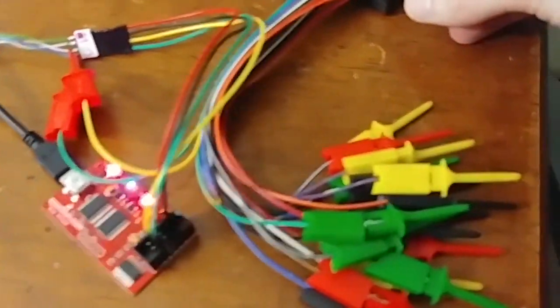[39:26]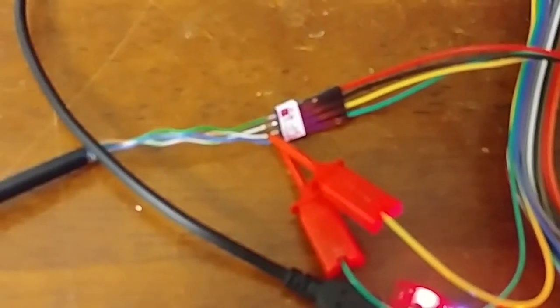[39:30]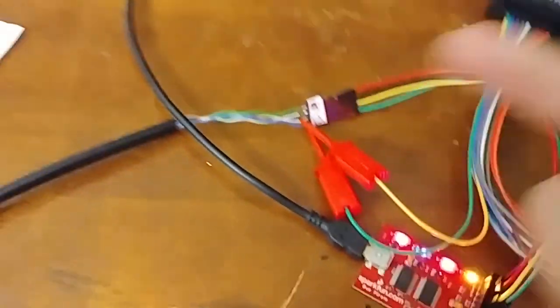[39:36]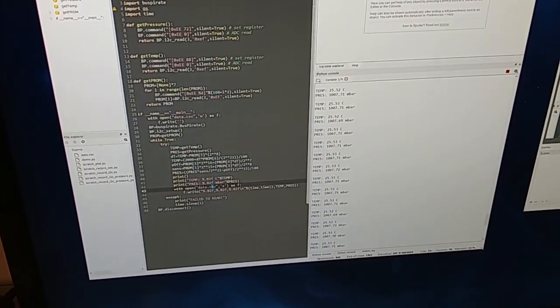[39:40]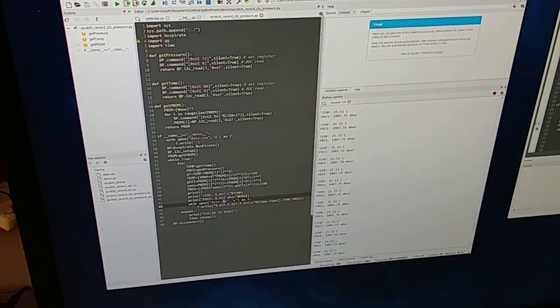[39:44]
This is a 16-channel logic analyzer, but obviously I'm not using all of them. I'm just going to probe the two channels that we're interested in, which are the I2C clock and data. So now that those are connected, I'm running the software that you saw earlier. It's the same software that just continuously reads temperature and pressure, and we can start sniffing the protocol.
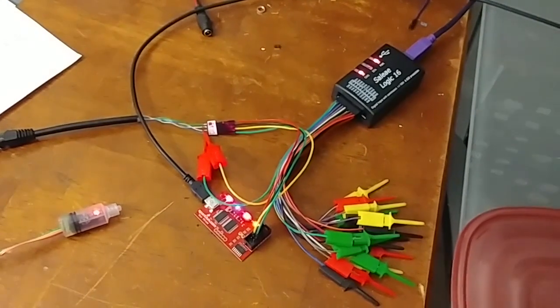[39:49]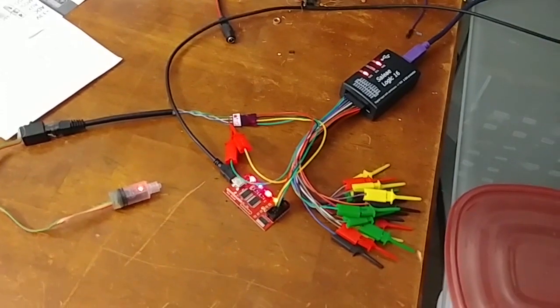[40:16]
The ultimate goal of doing this is so that when we start developing for the microcontroller, if we run into any problems, we know what the protocol is supposed to look like, and if the microcontroller is not communicating like this, then we can do whatever is necessary on the microcontroller side to fix it. I found this really helpful because my microcontroller code wasn't working right off the bat, so I had to go back to this level, checking it out with the logic analyzer, and seeing what the microcontroller was doing wrong. Ultimately I figured out it was a really simple problem, but it's helpful sometimes just to take a look at the protocol with the logic analyzer at various steps along the way.
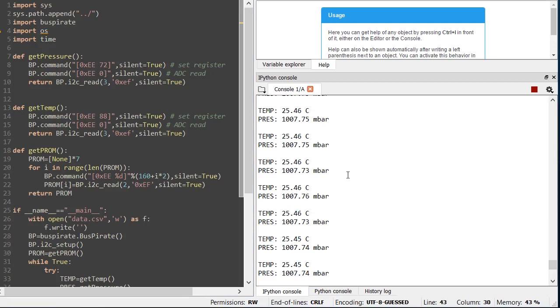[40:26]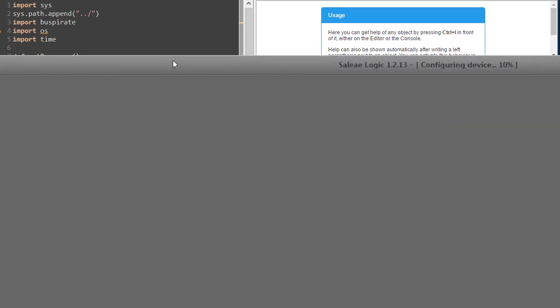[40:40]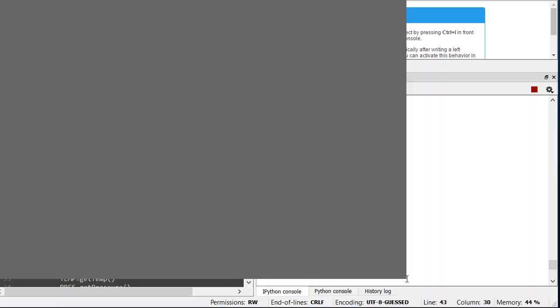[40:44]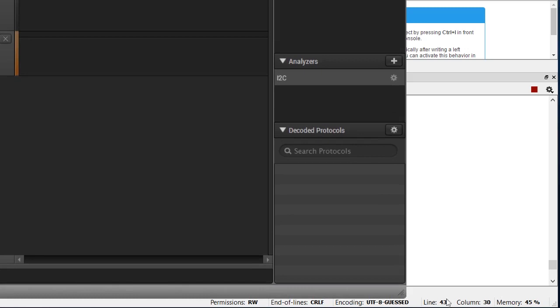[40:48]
Okay, so this software is still running. We are continuously recording data, which means we're continuously communicating over I2C using the Bus Pirate. So I'm going to open up the logic analyzer software. I'm going to resize it here so it looks good on my screen capture.
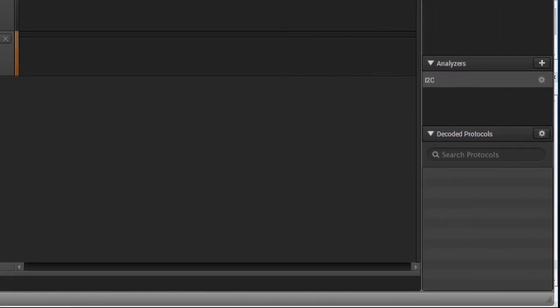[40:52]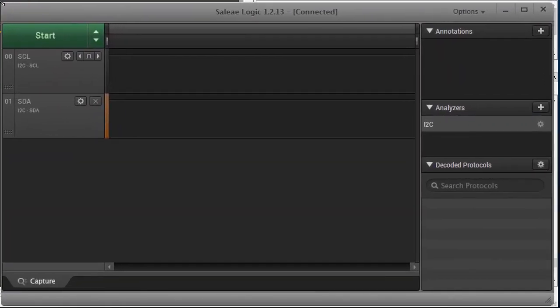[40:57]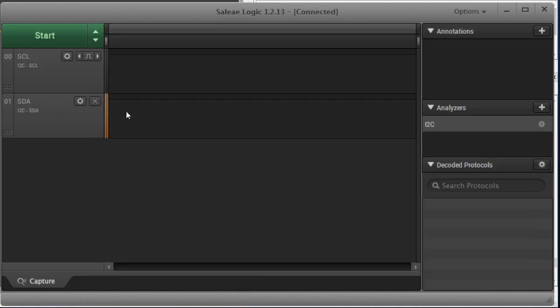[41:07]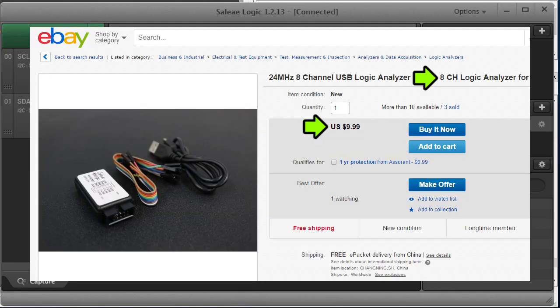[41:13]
And I would encourage anyone who is interested in doing any of this professionally to buy one of the professional units that comes with the software. The software is free and open source. This is really fantastic and convenient software. It's kind of a double-edged sword. It's convenient, but also disappointing that really inexpensive hardware clones are available on eBay.
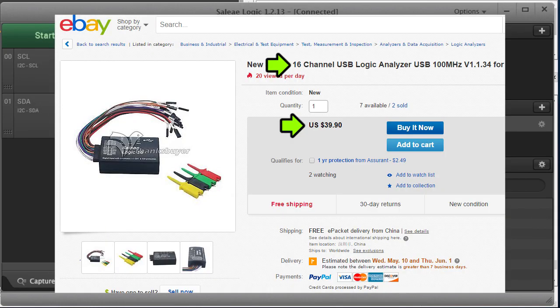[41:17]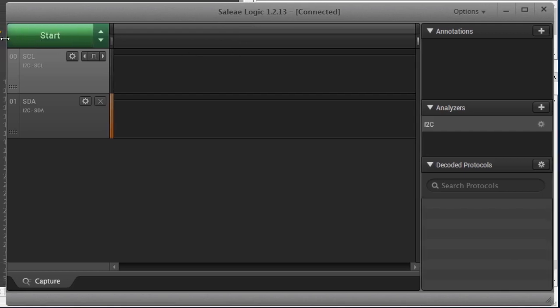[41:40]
I don't do any type of electronic stuff professionally, so I felt okay when I'm just poking around to try out the hardware I was able to get online. But if this were something I did professionally or for profit, or if anyone else is considering doing this type of thing, I would recommend investing in this company by buying one of their endorsed hardware units. I'm sure you'll get better support, some extra features in there. So with that being said, let's just go ahead and continue here.
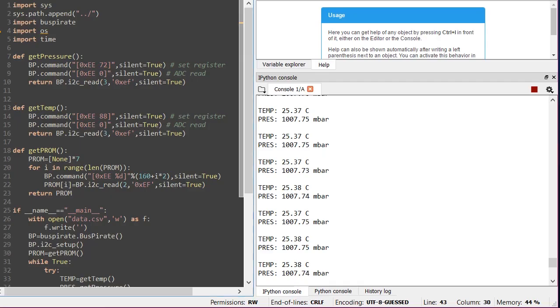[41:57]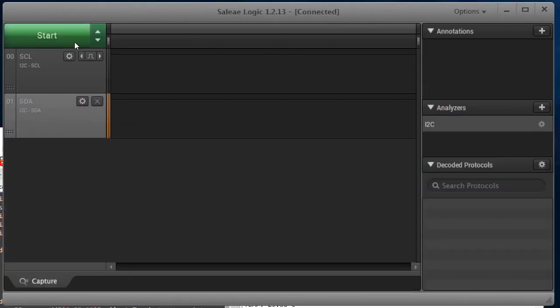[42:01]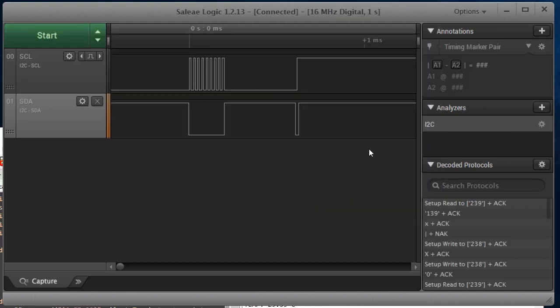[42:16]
I've already programmed it so it knows channel 0 is the clock and data is on channel 1, and it knows to be looking for I2C. And again, this is just continuously running in the background, so let's take a look at what happens. It's been a while since I used this. We're just going to record 1 second of data, channels 0 and 1, and it's set between 3.6 and 5 volts, so that looks good. So I'll just hit start. Got a whole bunch of samples, and wow, cool.
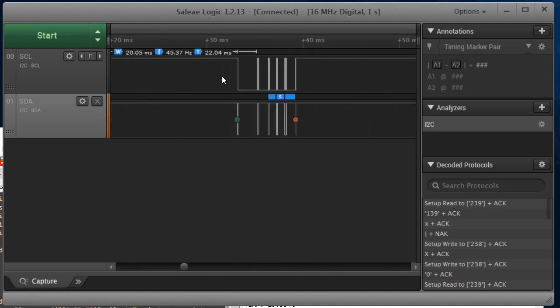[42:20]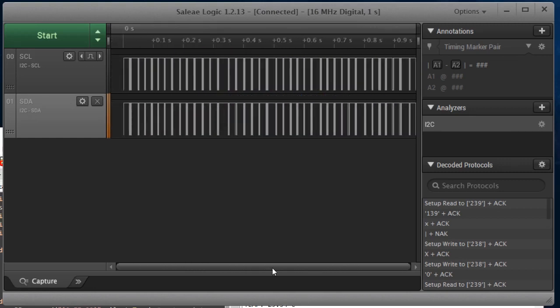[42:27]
So I can zoom in and out, and we can see this. Okay, let's back up a little bit and talk about I2C. These lines, if no data were being sent, I kind of want to simulate it, but I'm sure you can get the picture.
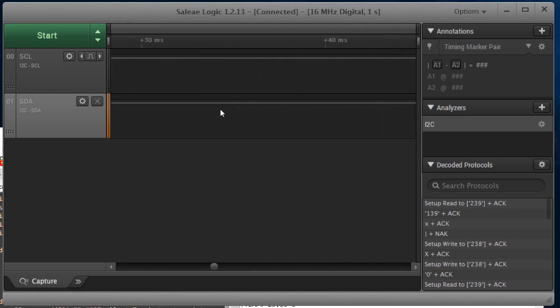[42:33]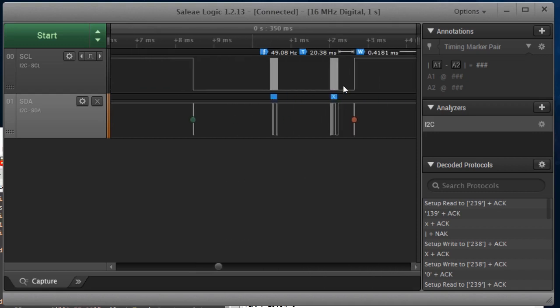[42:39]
If no data is being sent, it's like this, where both of these lines are high. Only when data starts to be sent and received are these lines pulled low, and either the microchip can pull it low, like the host, the microcontroller, or the slave, so the sensor in this case, can pull it low. So this lets you communicate bidirectionally.
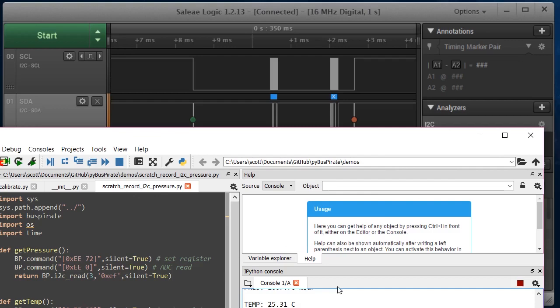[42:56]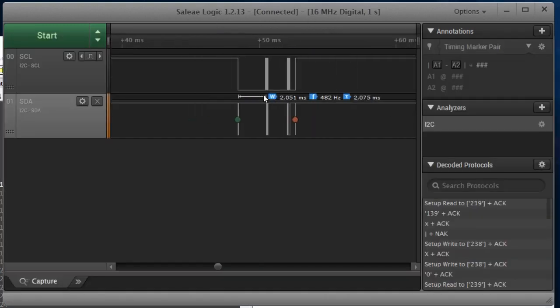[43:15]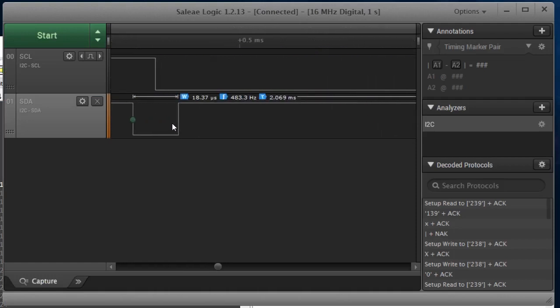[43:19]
If we consider the software, when we do get pressure, it does three commands. It does this 72 command, this zero command, and then it reads 3 bytes. And there's a little bit of a delay between each of these three because it's interacting slowly over the serial protocol. So it doesn't surprise me at all that we see our data in three little bursts. So let's take a closer look.
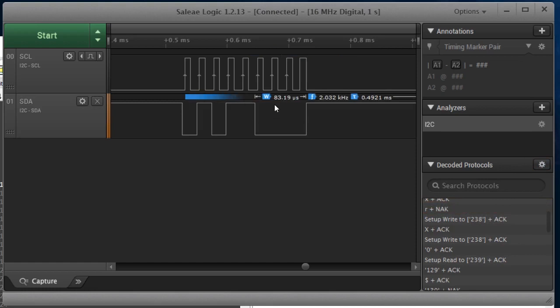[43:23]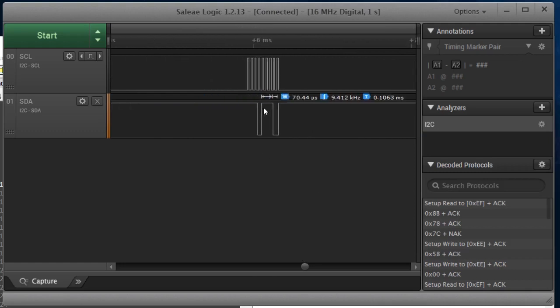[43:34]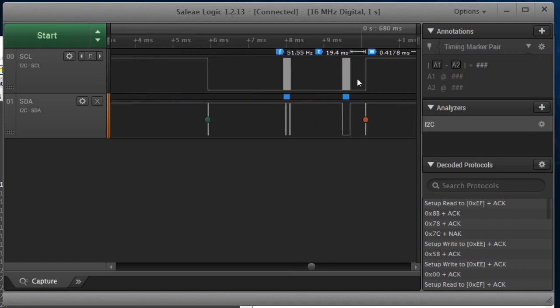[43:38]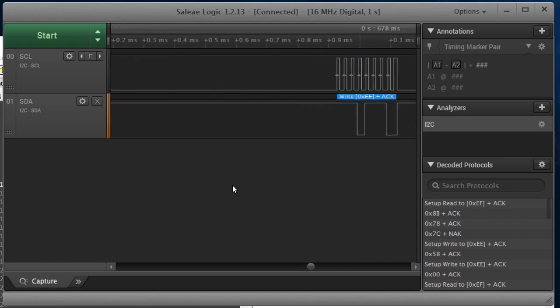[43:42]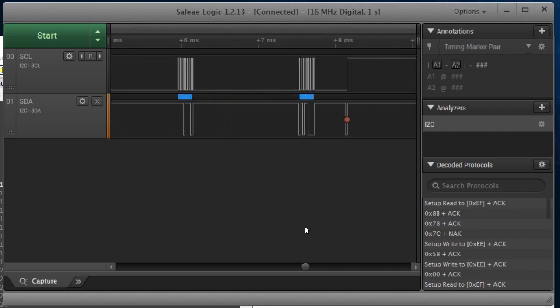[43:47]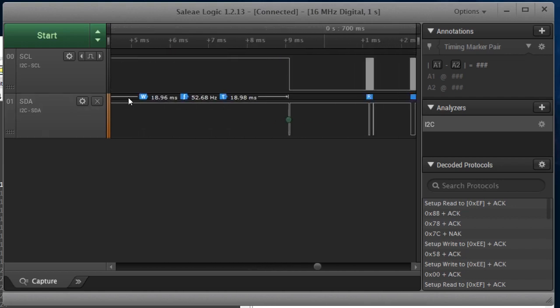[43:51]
Can we change it to show hex? Yeah, okay, there we go. All right, 0xEE, that's what I expected, and then 0x58. Let's look at the next one. 0x00. 0xEE. So that 58, I'll bet, was one of those two commands we're interested in. So let's just keep going here.
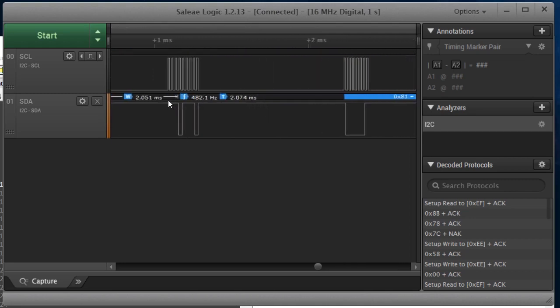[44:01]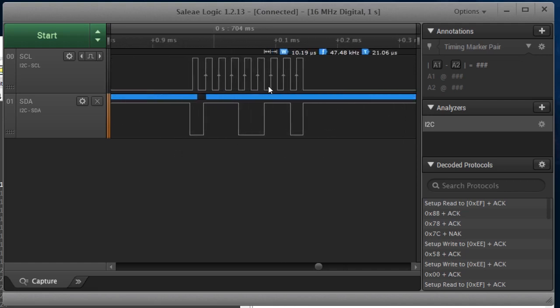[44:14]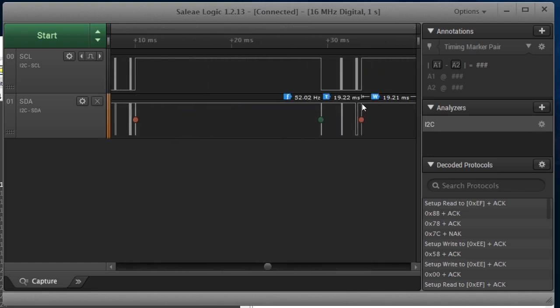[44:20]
What's the next one? All right, so now this is getting fancy. 0xEF. So we're going to be getting 3 bytes afterwards. And yeah, that's what we get. So remember, EF was when we're going to be reading from the sensor. That's what gets sent. And then 0x81, 0x23, 0xE6. That's the actual data coming back from the sensor. So this is pretty straightforward. You can just glance at this and get an idea of what the protocol should be looking like.
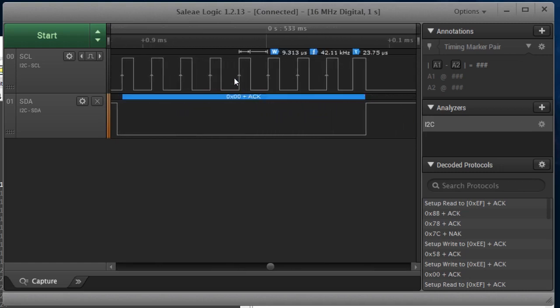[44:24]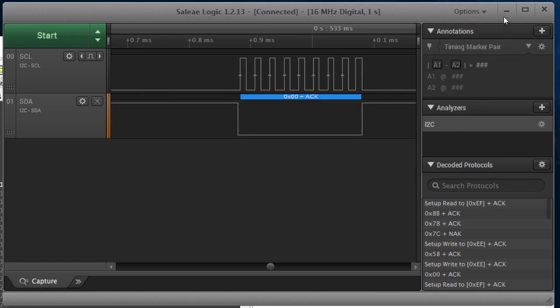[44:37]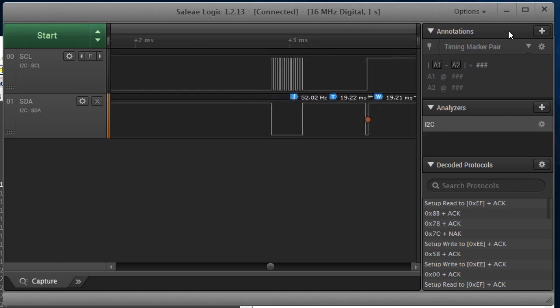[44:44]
So if you code this to work with a microcontroller and the microcontroller is not working, you can probe the lines and see if it looks like this or doesn't look like this. So that's pretty much all I need to do here. Let's take the next step and work on designing this with a microchip so we can interact with it without using a computer.
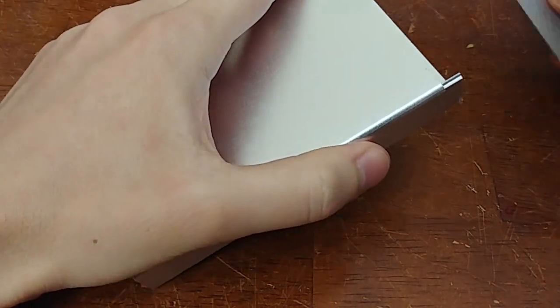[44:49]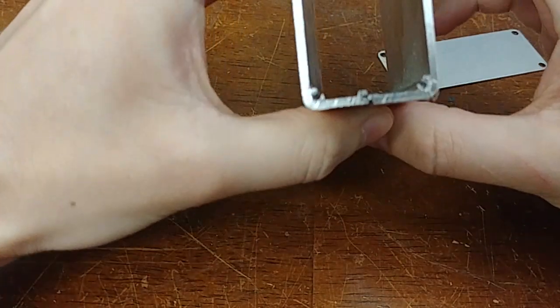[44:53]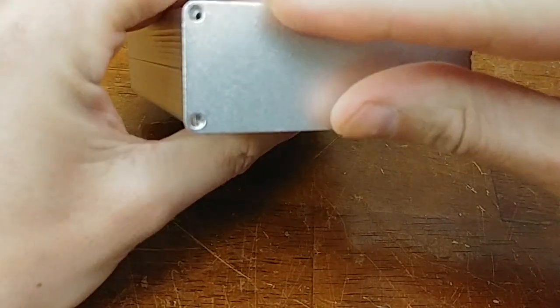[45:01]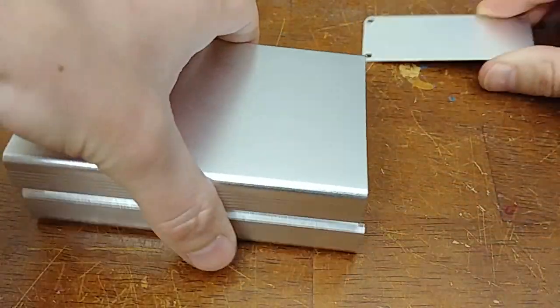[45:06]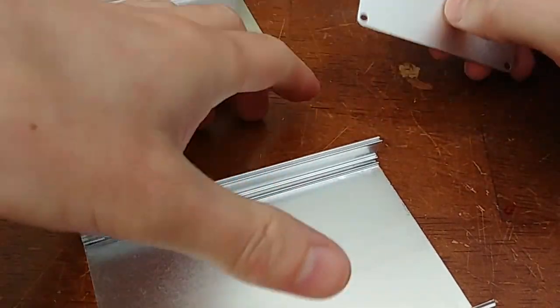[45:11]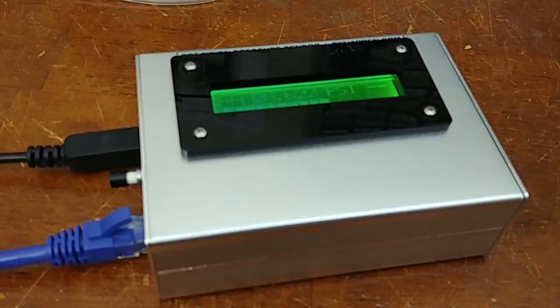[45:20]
I'm not going to walk you through all the way I designed and built all of this. There are a lot of pictures of the build process, but I will say I started with this aluminum enclosure. It's pretty cool. They have these little teeth, which makes it easy for them to mesh together. And they have front panels, which just slide over and can get screwed in. This is made of aluminum, so it's really easy to drill, and it's easy to use a nibbler to cut out square holes and stuff like that. So that was my starting point. And rather than walk you through every step of the build process, I'll just take this apart and show how that works.
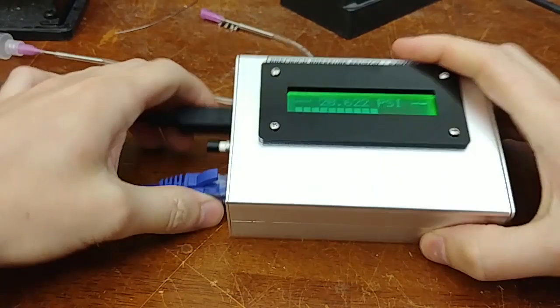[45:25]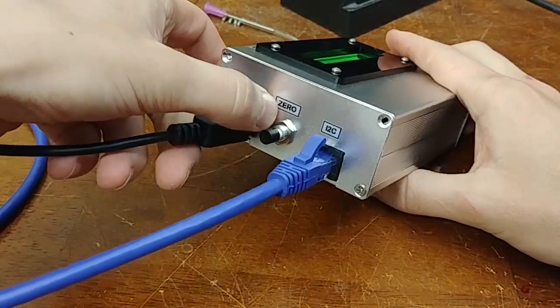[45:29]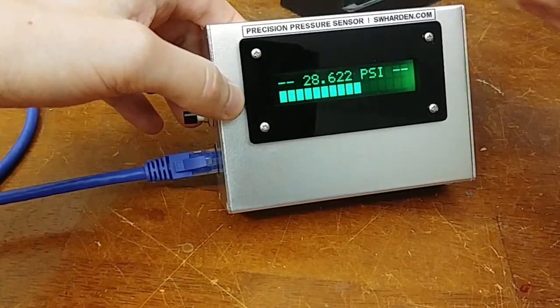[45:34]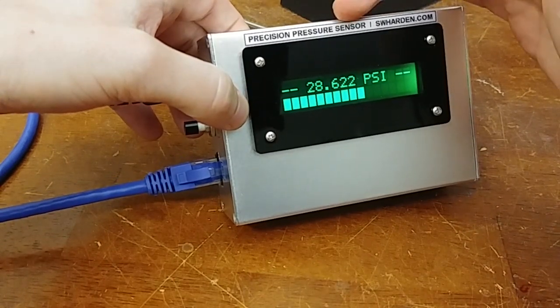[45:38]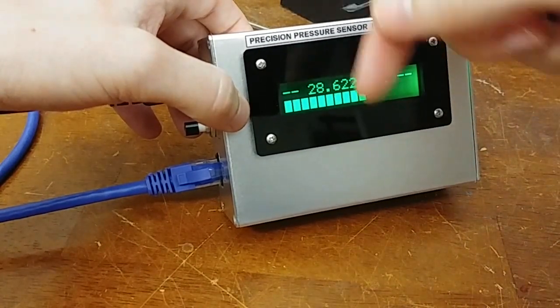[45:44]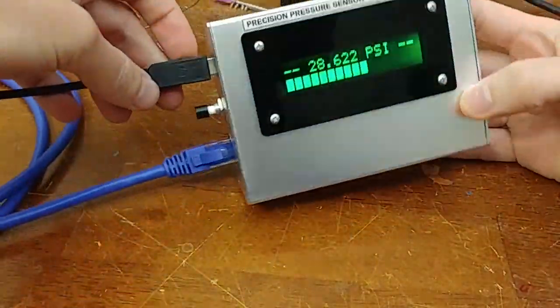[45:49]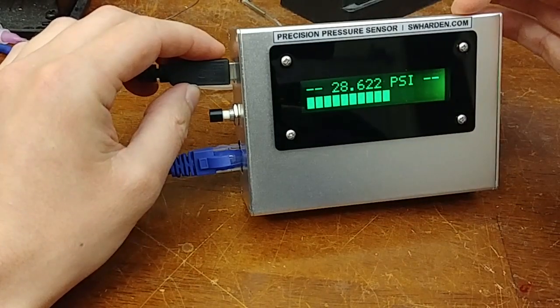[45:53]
I'll adjust my camera here. Okay, so actually I will mention that these little labels, they look really good, but they're just standard labels from a label maker. But instead of a white background, it is a transparent background. And I enabled the setting that makes it print a black square around the edges, so if you carefully cut around the black square and stick it to your metal case, it actually looks pretty good. So I'm glad I like the way that came out. I'm going to add a link to that on the project page.
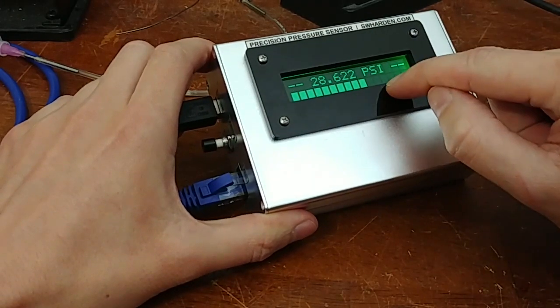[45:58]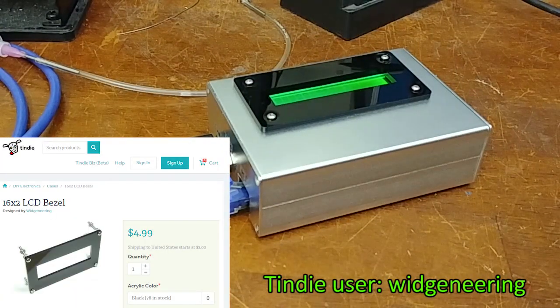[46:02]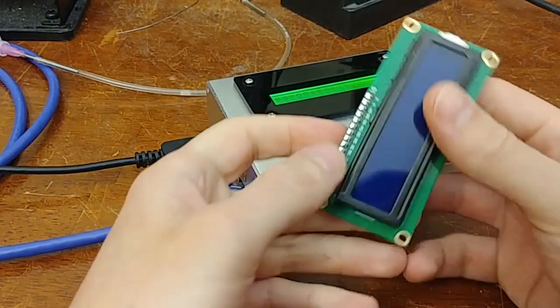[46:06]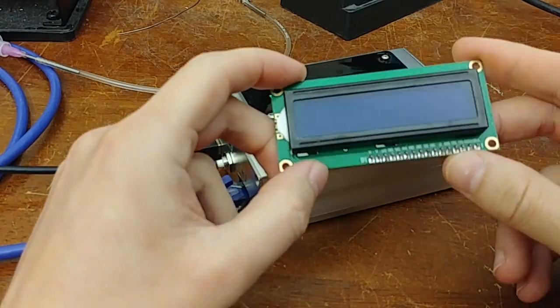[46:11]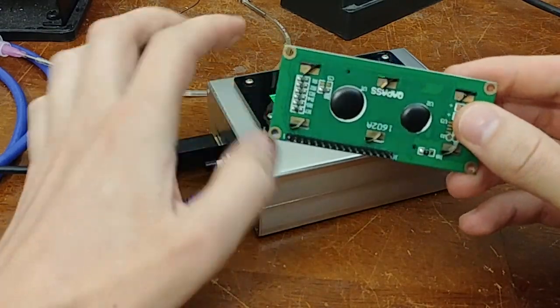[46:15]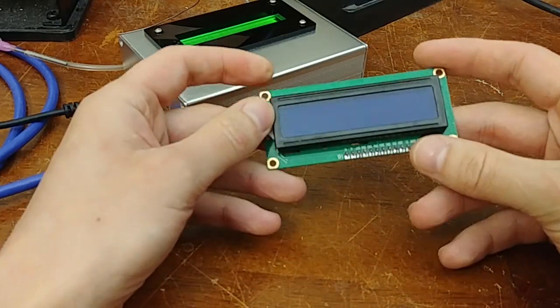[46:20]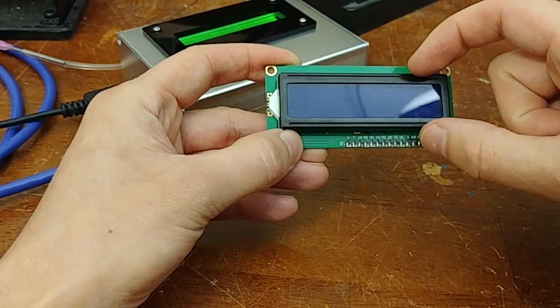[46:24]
Also, I want to give a huge shout out to whoever it was who made these little bezels for the LCD screens. Let's see, I think I have an LCD screen here. Okay, so these are really standard Hitachi type LCD screens, and everyone uses these things all the time. They're extremely inexpensive, especially from China. We're talking like $1 or $2 each. They're usually about 16 characters wide by 2 characters high. You can get them in various different dimensions.
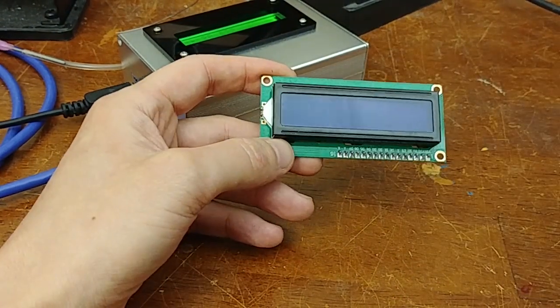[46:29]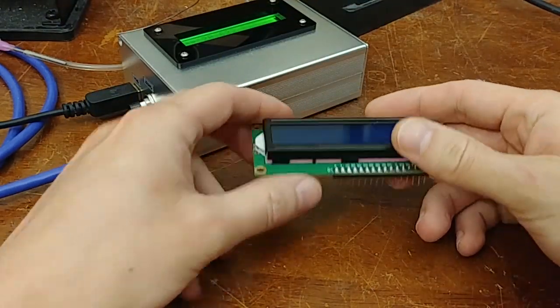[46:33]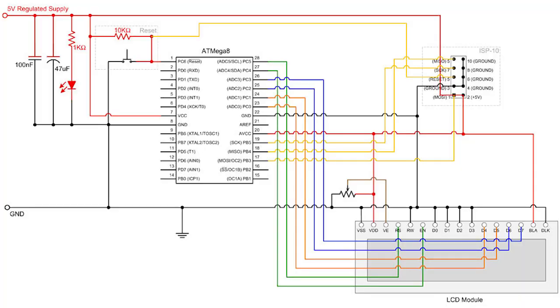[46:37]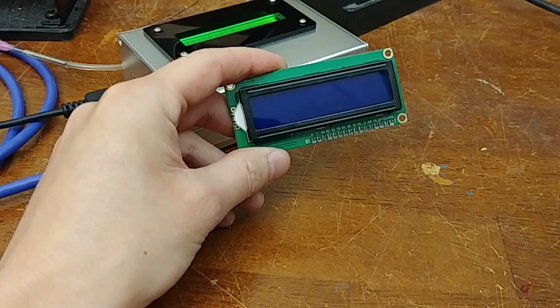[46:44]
I don't have any floating around right now, but I have some that are like 4 rows high by 20 wide. And they communicate with a lot of pins though, so you're going to need about 6 or 8 free pins on a microcontroller if you're going to interface a screen like this, and more if you want to control the backlight with software.
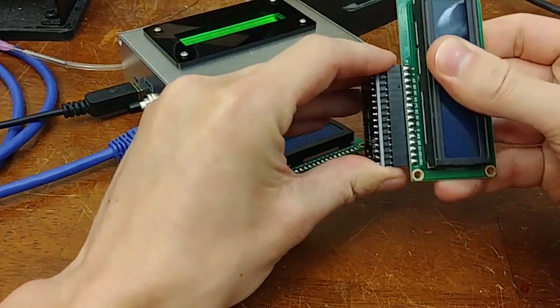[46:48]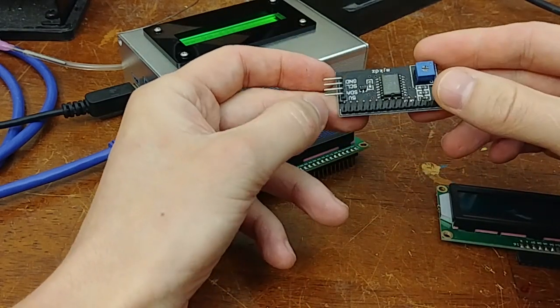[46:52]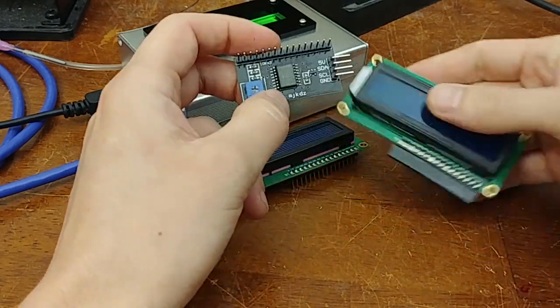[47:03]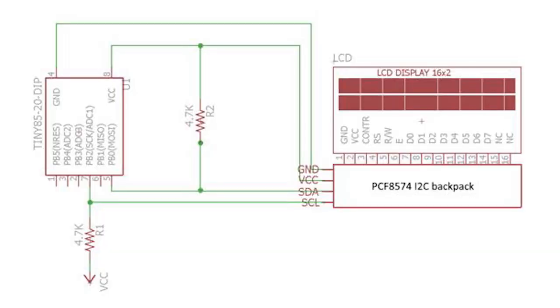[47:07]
Something else that some people make on eBay, and there are just a whole bunch of these, are I2C controllers for these displays. So you can control the display with only 2 wires, which is pretty cool. The advantage is simplicity. So now instead of having a big ribbon cable going to a bunch of pins on your microcontroller, you can just drop this on your I2C line, which in the case of this project is already existing. The microcontrollers are already using I2C.
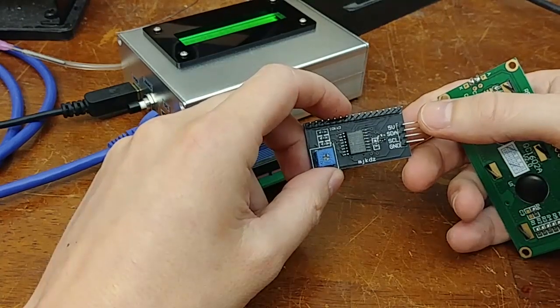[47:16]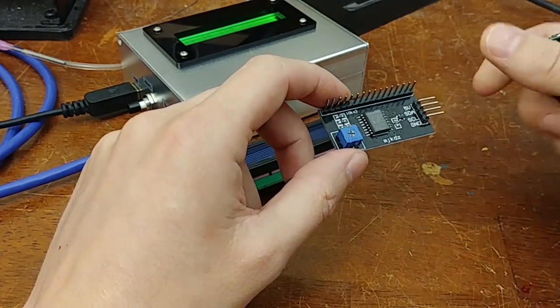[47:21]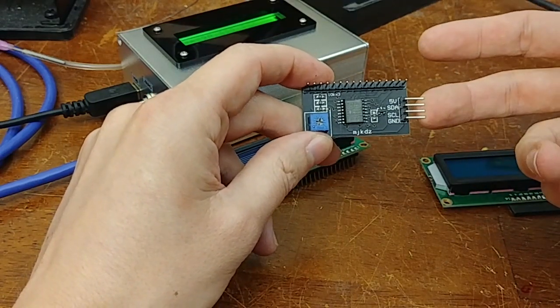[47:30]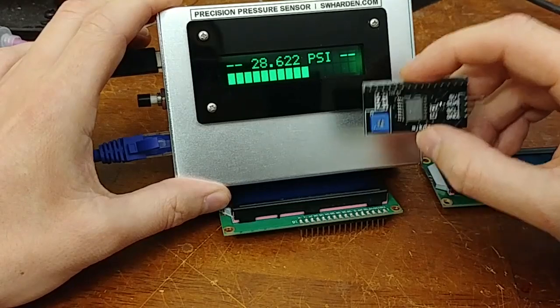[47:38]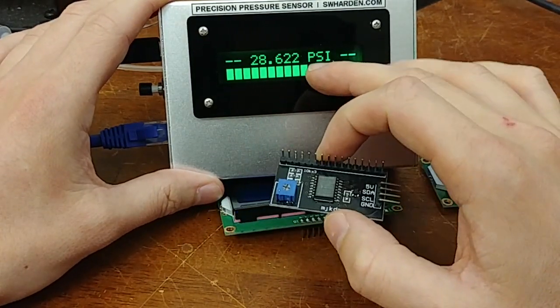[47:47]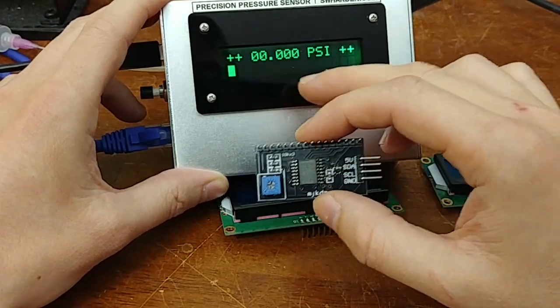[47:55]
The downside is that you have to have a little bit more advanced software running on the microcontroller. There's potentially an extra layer of debugging. And also, since you're doing a serial to parallel conversion, essentially, you have to send a lot of serial data to get one clock flip on the output of this parallel data. So for updating a screen like this at high speed, you're going to be limited if you use a chip like this. For this type of application, it's fine, especially because the character display of this LCD doesn't update very quickly. But it is worth noting that I pretty much am maxing out the speed at which I'm updating this
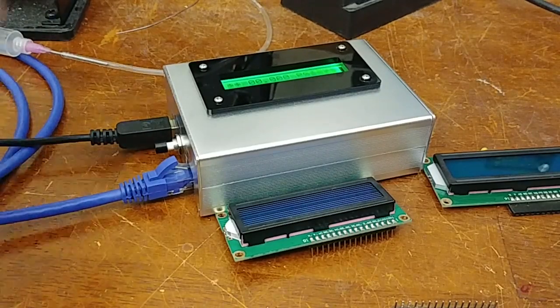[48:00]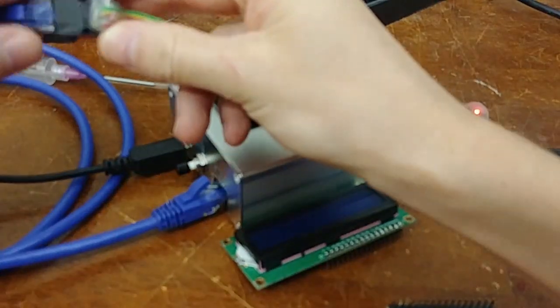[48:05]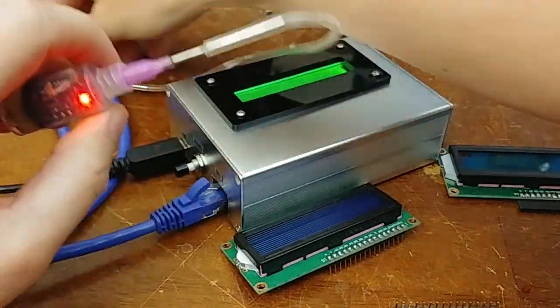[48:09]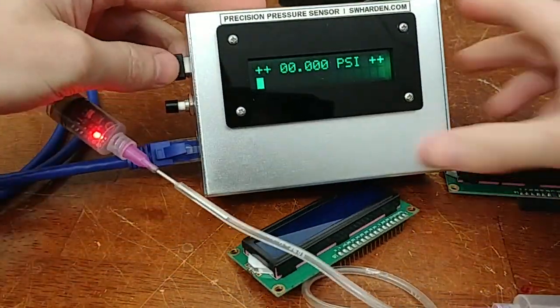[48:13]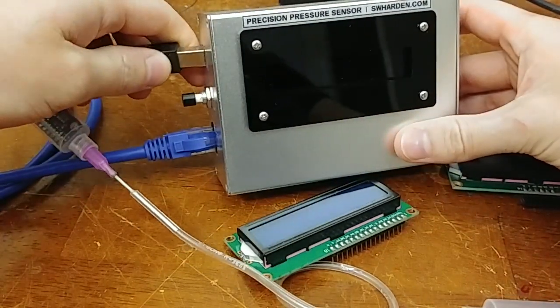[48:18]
display. Let's see if I can plug this back in. Oh, it's still plugged into the computer. Okay, let's take another look here. I'm gonna hook it up to a pressure source. Something's wonky here. Let me reset it.
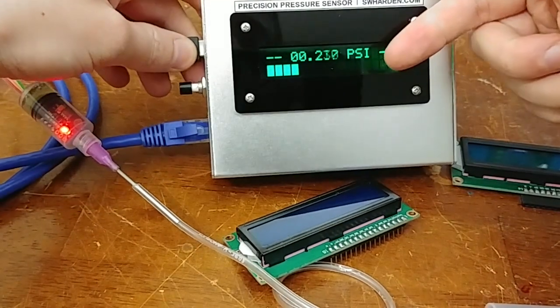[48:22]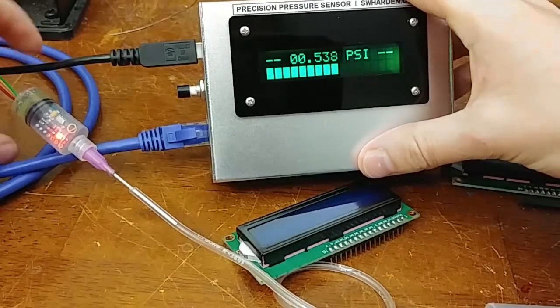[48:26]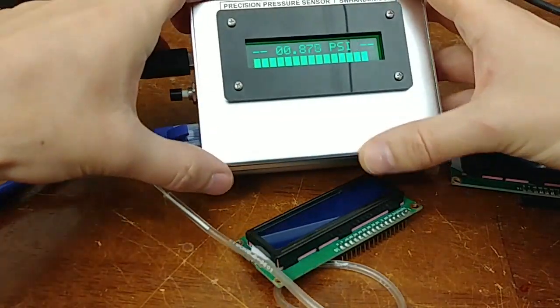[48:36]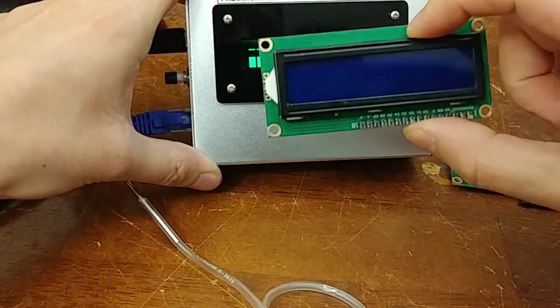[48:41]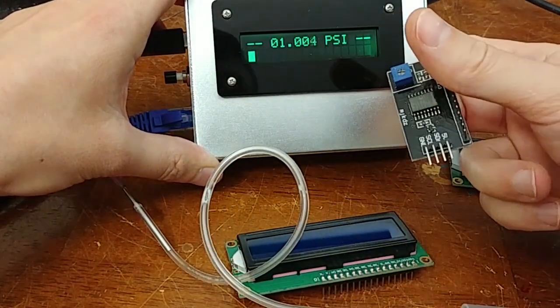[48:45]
Okay, there we go. So the limiting factor of this update here is actually not the rate of the sensor. This sensor has the capability to have even faster updates. We can update more than this frame rate just from the sensor. The limitation here is how fast I can send all of the screen data to the screen over this I2C adapter. So I'll add a link to that. But okay, I got off topic.
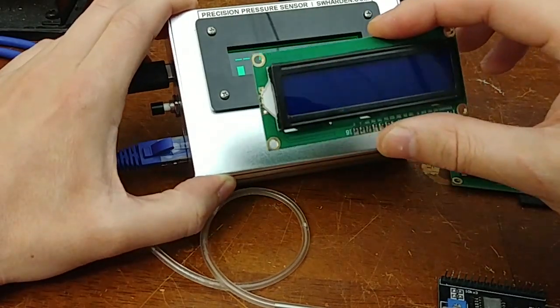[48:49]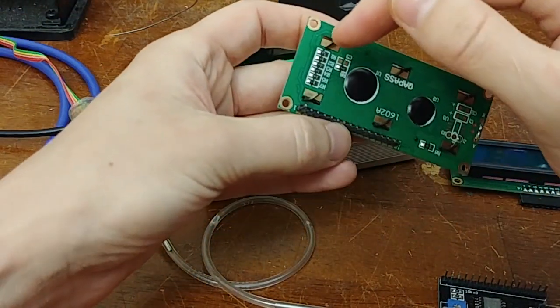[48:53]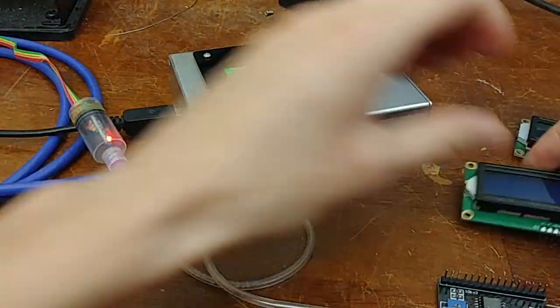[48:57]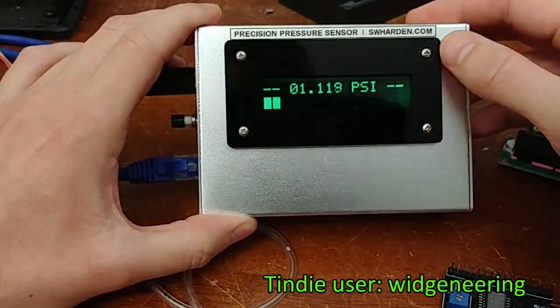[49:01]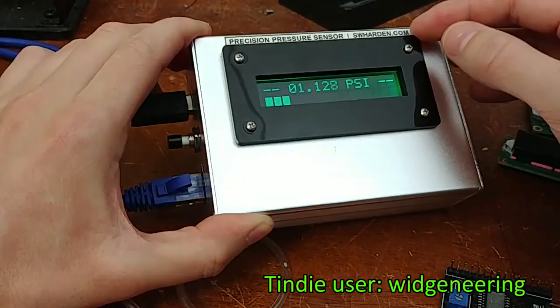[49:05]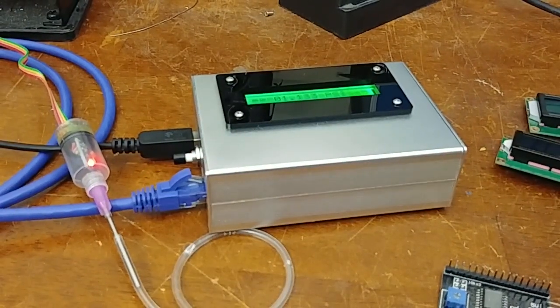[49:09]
These LCD modules are fantastic, and they have a standard form factor. These screws are in the same place no matter what brand they are. So there's this guy on Tindie, well actually I don't know if it's a guy, I don't know who it is, but I'll definitely add a link to it. This is the first time I've used these, they're fantastic. I'm gonna go grab some so I can show you what they look like.
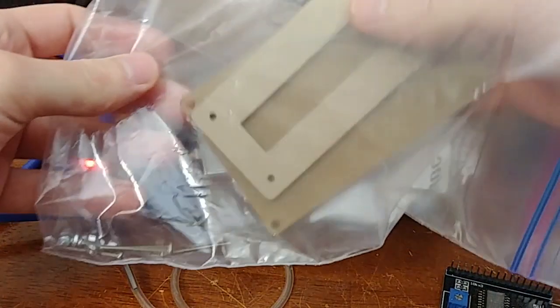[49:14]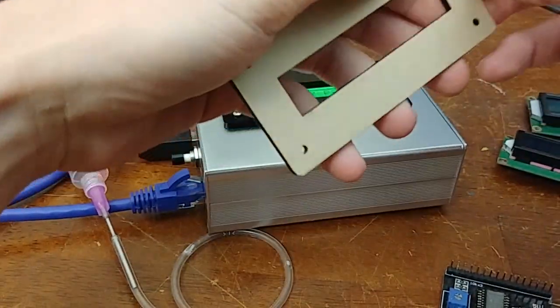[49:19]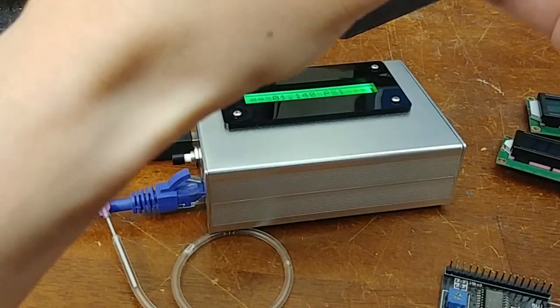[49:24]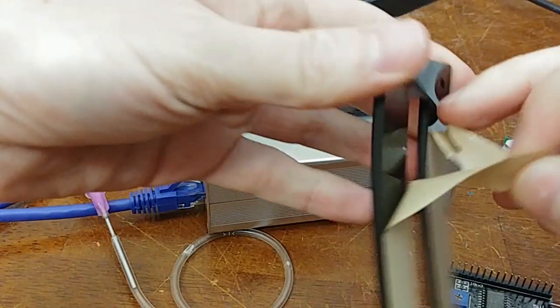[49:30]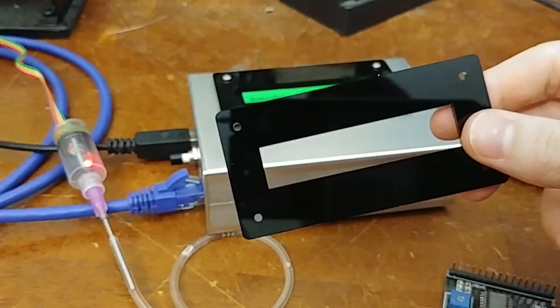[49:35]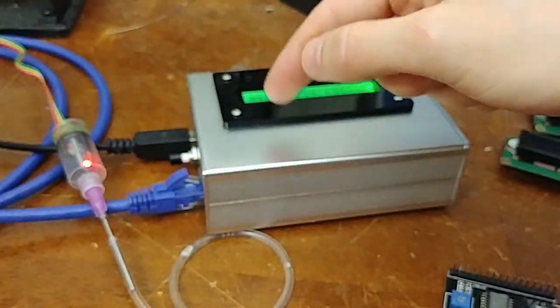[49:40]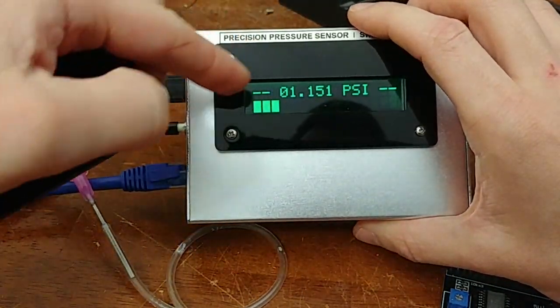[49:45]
Okay, so this is how they come. Actually just one is needed here. So these are little bezels for the LCD display, and it makes it so nice and professional looking to mount a character LCD on your board, and it's just a piece of acrylic, but it's already pre-cut out, and the kit comes with little mounting screws, so you can just make a square cut in any piece of metal or plastic or whatever. I use a nibbler to do that, and it doesn't even have to be a perfect square. It can be all jagged and everything.
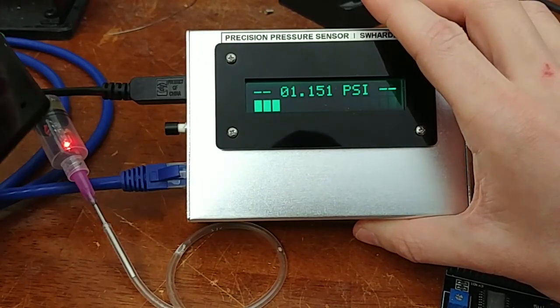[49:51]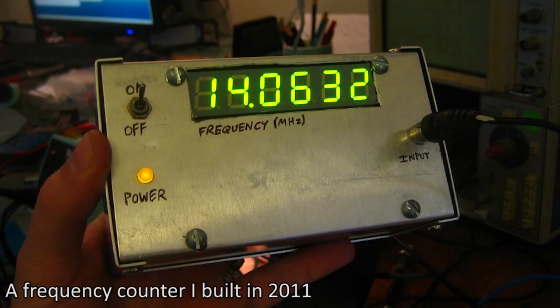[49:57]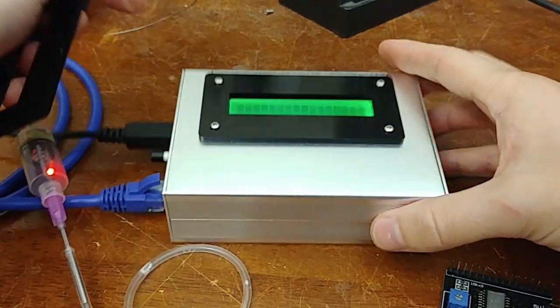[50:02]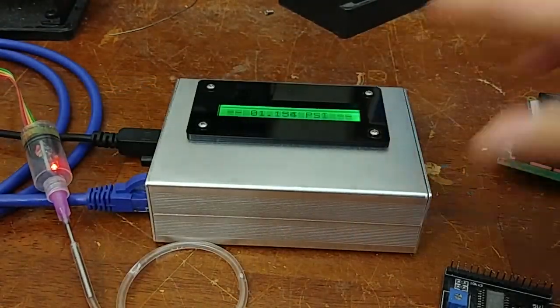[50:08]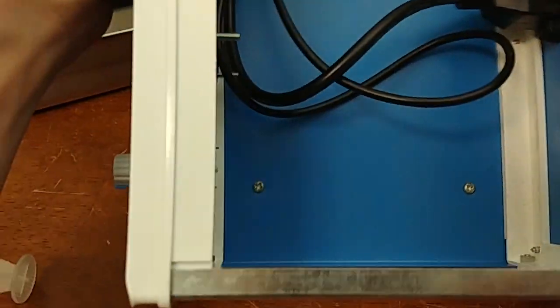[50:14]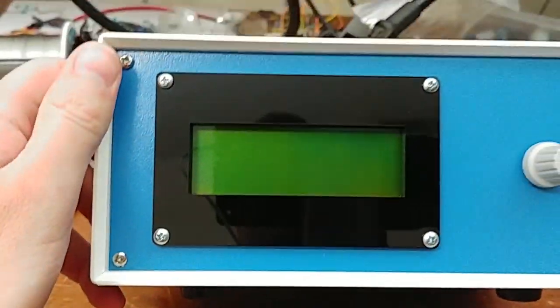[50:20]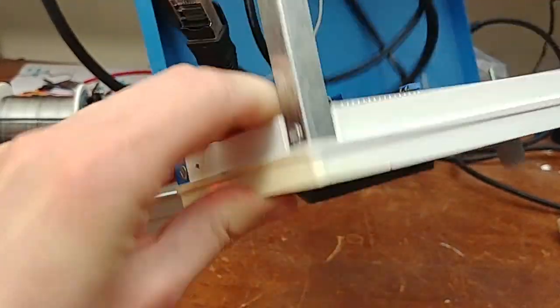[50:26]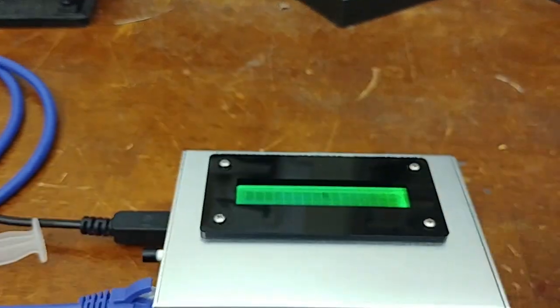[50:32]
Mounting these LCDs can sometimes be hard, and there are some pictures of old projects I've made, really kind of clever projects, but they look so bad because the quality of the mounting of the LCD just wasn't on point. But these bezels really make a difference. So big shout out to the person who develops these as well. I have a project that is in the early stage of work, but there's this kind of big case here, and there is a screen on the front, and it looks really nice. And that's just a character LCD with that same driver on the front, and these bezels make a big difference. So, okay, I'll stop talking about those for a little bit.
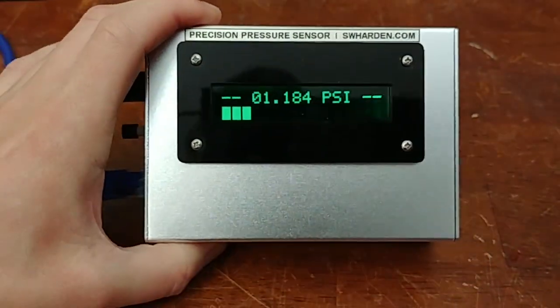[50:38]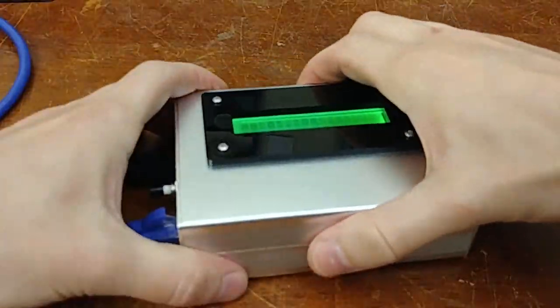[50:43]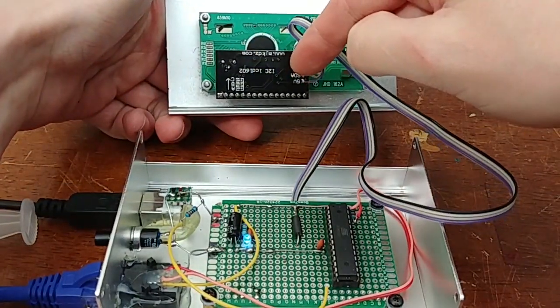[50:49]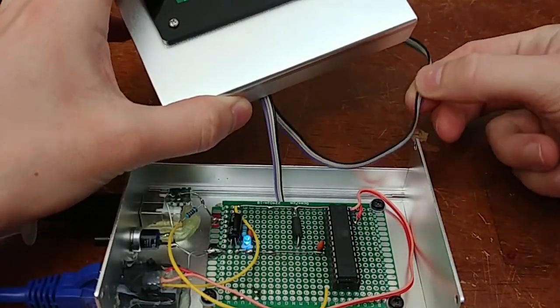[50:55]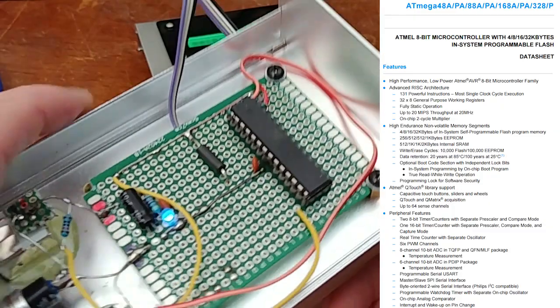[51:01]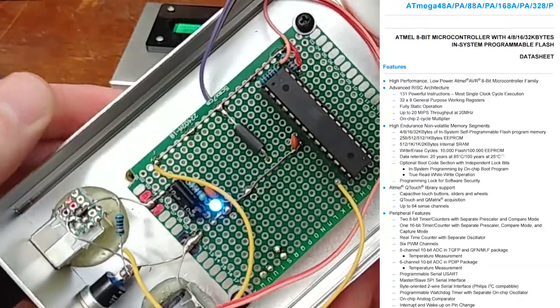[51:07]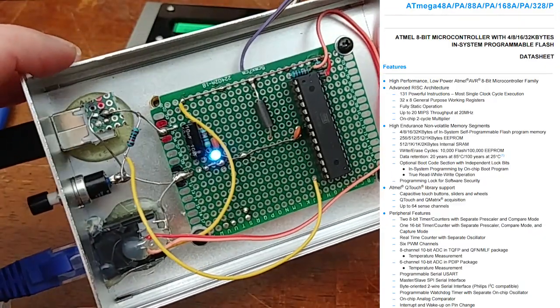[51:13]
In order to understand how this works, rather than showing the build process, I'll show you the deconstruction process. So, we saw those enclosures. I just unscrewed the screws on the top on both sides, and this just kind of rocks out. So there's my I2C converter, and this is really simple. It's just four wires, two are for power and two are for clock and data. And the microcontroller I'm using is an ATmega 328. I don't know how well it shows up there. Yeah, an ATmega 328. And I probably could have made something a little bit simpler, but this is fine, and I had a box of these. And the circuit is just incredibly, incredibly simple.
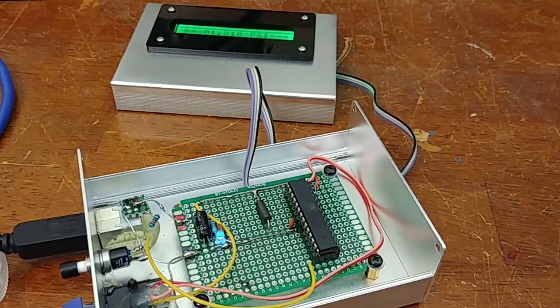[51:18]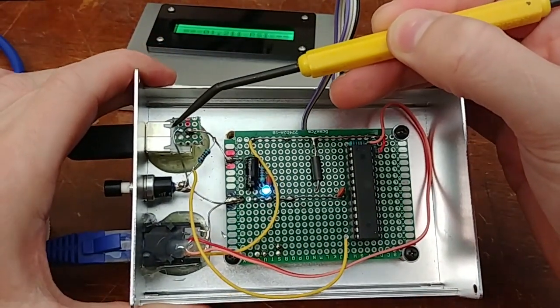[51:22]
Grab a pointing object. So I'm going to be pulling power directly off USB. So we have power, positive power is this one. It goes here. There's a little bit of a decoupling capacitor here just to smooth out power a little bit more. And ground goes across here. Ground goes here. Ground goes straight to the microcontroller. And then the microcontroller is powered through this 5-volt rail, but it goes through a series inductor.
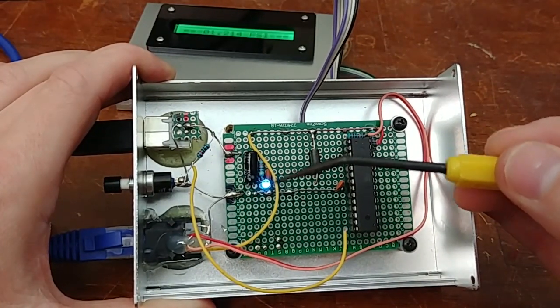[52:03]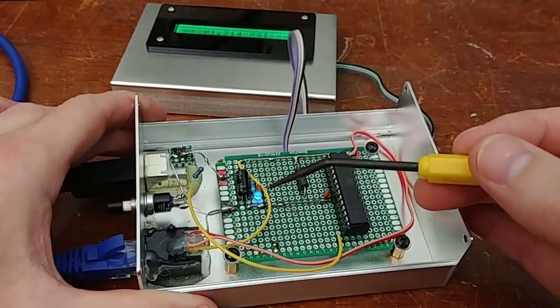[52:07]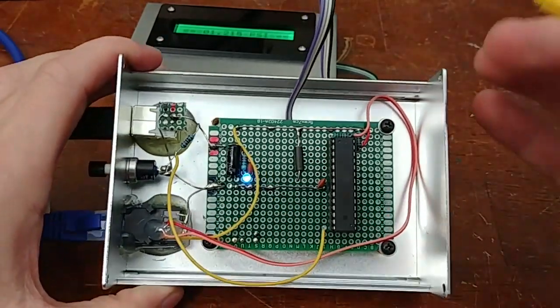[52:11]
It's really more of like an RF choke, and that in combination with the parallel capacitor to ground, it just helps smooth the power a little bit. And gosh, that's it. There is not a lot in here. We have a 47k ohm resistor in series with an LED, just while I'm working on it to know that it's powered up. No one can see the LED when the screen's closed.
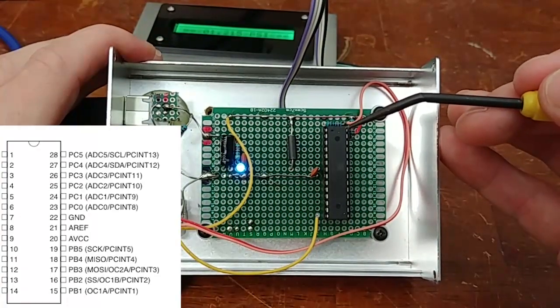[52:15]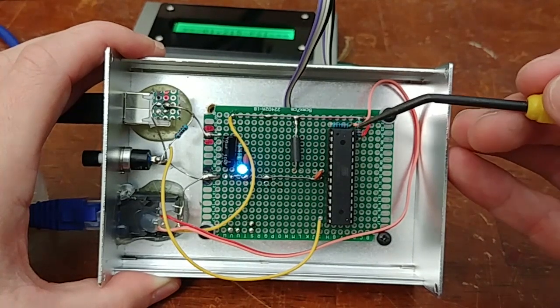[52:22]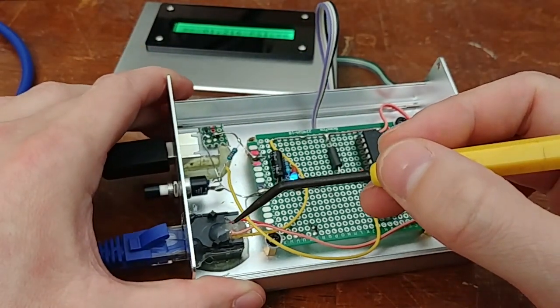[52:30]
And then the top two pins here are clock and data for I2C, which is natively supported by this microcontroller. I am using two 10K resistors to pull them high. So both pins are pulled through the resistors to the 5-volt rail. And then these two wires just go straight to two connectors on this Ethernet connector.
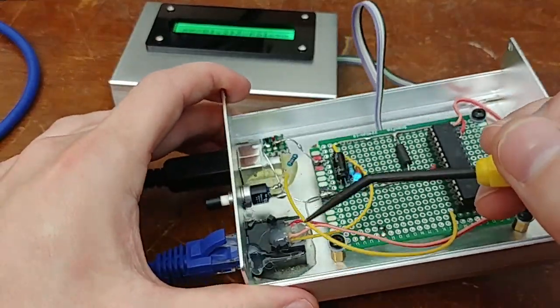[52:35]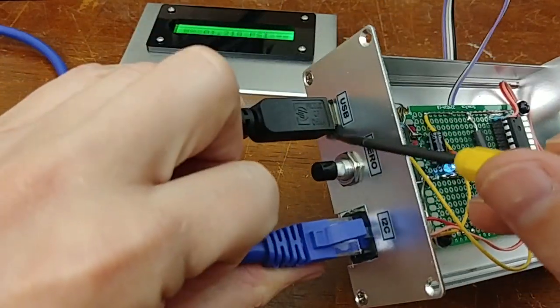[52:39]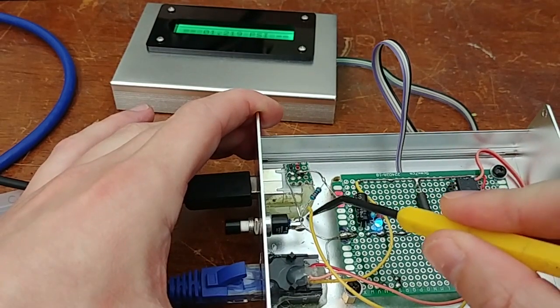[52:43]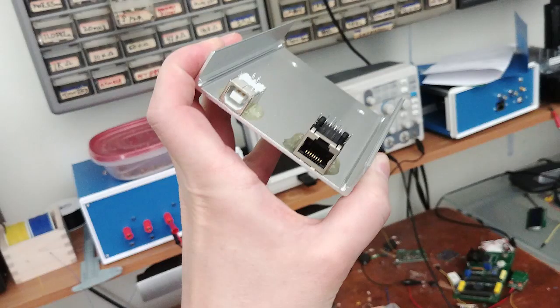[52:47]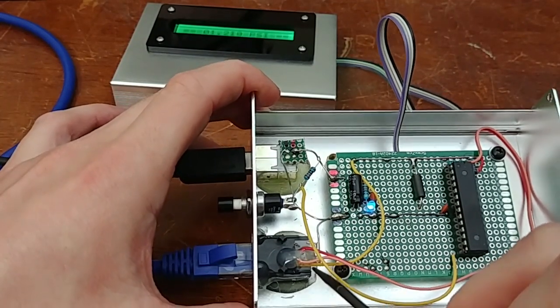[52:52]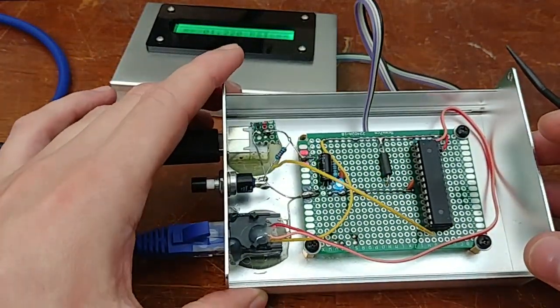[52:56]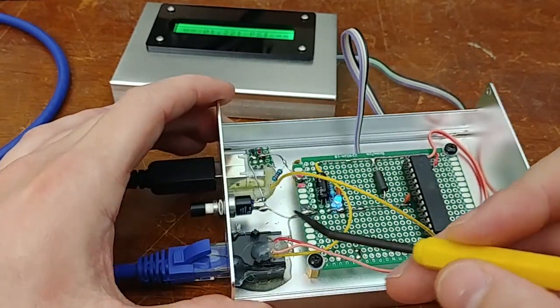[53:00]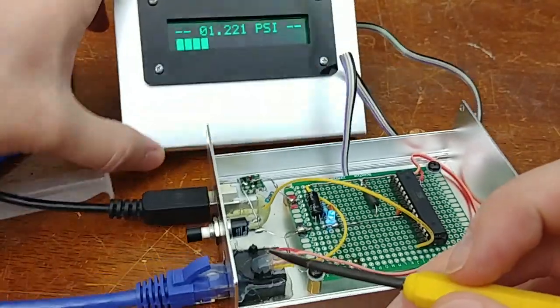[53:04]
The first thing I did was cut out square holes here and here with a nibbler. Then I lined up the connectors and used a really hard acrylic or epoxy to get this in place. In the case of this Ethernet connector, since I had some small flimsy wires going to it, I added hot glue just to keep everything in place. But that's really everything. The only other thing is this switch, which helps with the reset.
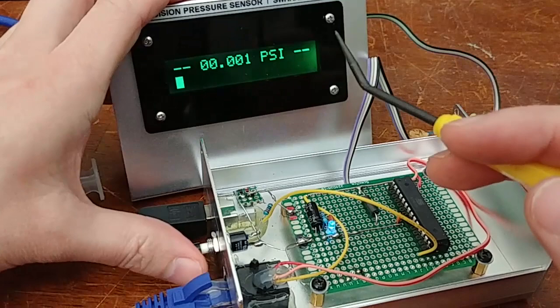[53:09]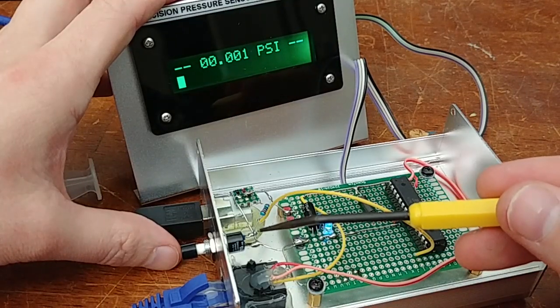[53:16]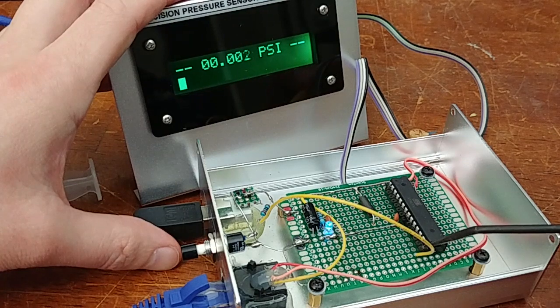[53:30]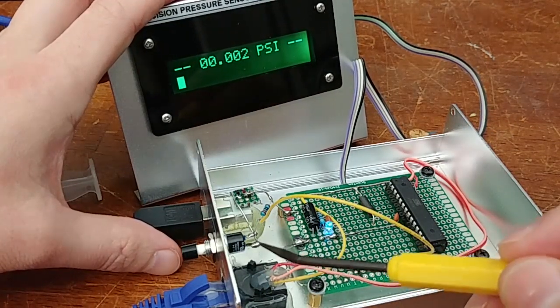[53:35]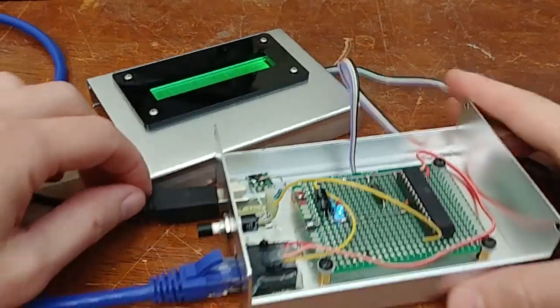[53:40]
So you can probably see the screen up there. If I push it, it does a baseline reset. The microcontroller between each read looks at the voltage on this pin, and the voltage should always be 5 volts. You can see there's this series resistor to the positive rail. It's probably like 10K. I can't really read it from here. The yellow wire takes it over here, and it should always be 5 volts. However, when you push the button, it shorts this little circuit and pulls it down to 0 volts. So if the microchip sees 0 volts on that pin, it knows a reset is in order.
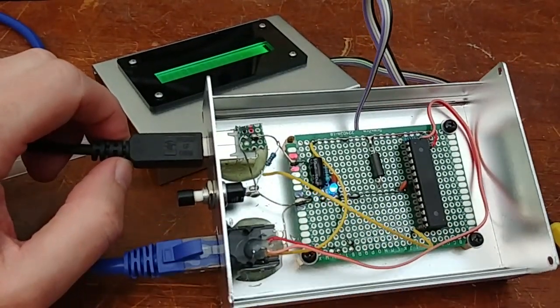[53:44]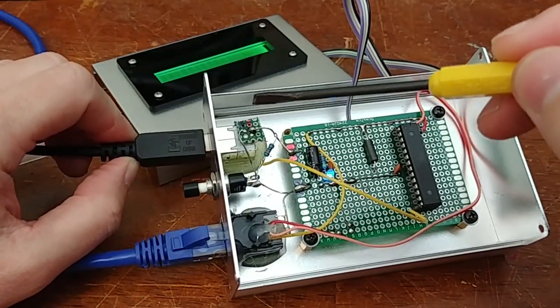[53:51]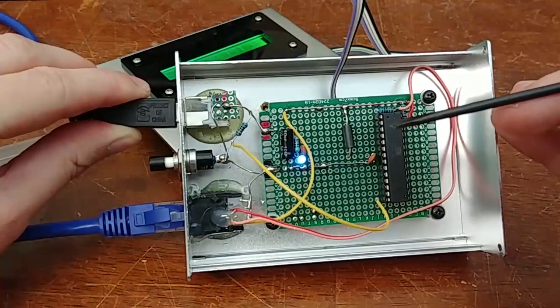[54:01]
I can't remember if I mentioned it earlier or not, but right now there is no data being sent from the microcontroller to the computer, so this USB is just being used for power. However, it would be trivially easy to log temperature and pressure data on the computer, because we have a few extra pins here that are used for transmission and reception of serial data, and I think I've got one here, yeah.
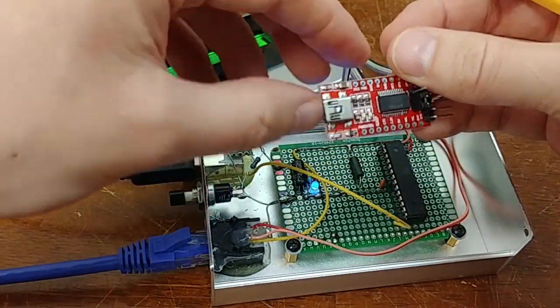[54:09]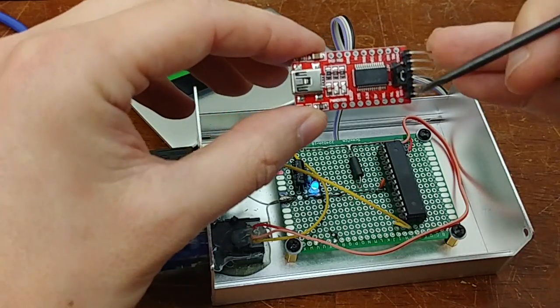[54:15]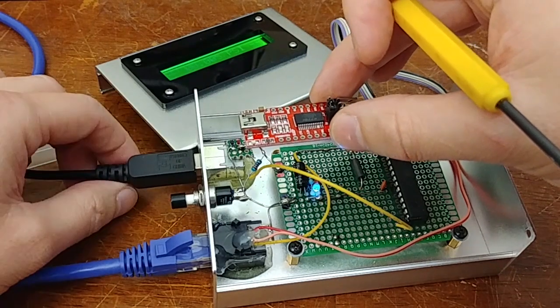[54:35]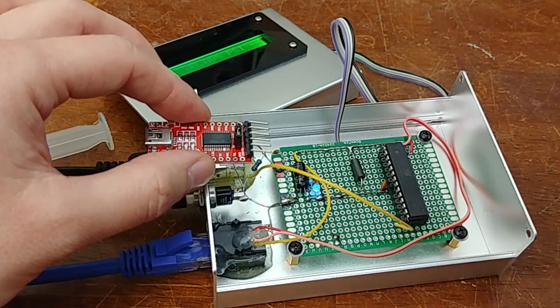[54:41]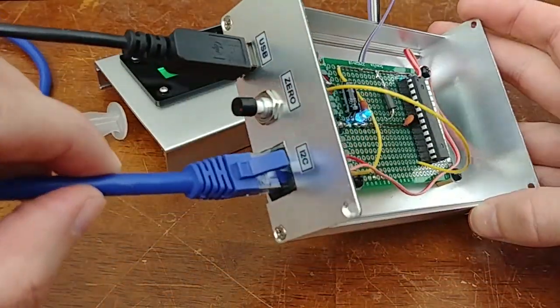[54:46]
So this is an example of a serial to USB adapter, essentially. This is an FTDI little chip that if you plug in a USB port here, it looks like a USB serial port. This might actually be the exact same chip that's on the Bus Pirate. I haven't looked at it too closely. But it's really convenient, easy, just drop it in your circuit. It doesn't need special drivers or anything like that. Then this USB plug would be able to see a serial COM port. Those serial wires could be connected to the microcontroller, and then you could effortlessly get data off the microcontroller. So I think that's about everything involving the construction.
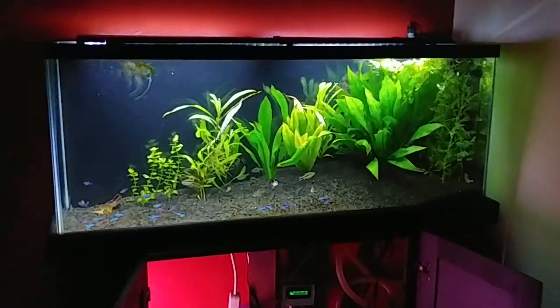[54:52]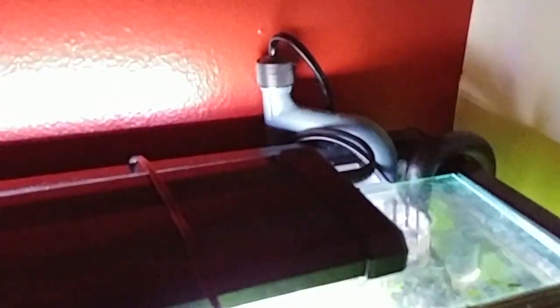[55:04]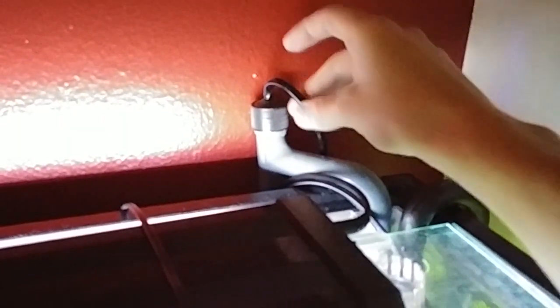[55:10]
So this is the system that I'm going to be working with, and I don't have the yeast reactor set up yet. So all the equipment right now is below the tank, and for now I'm interfacing my pump inlet here, and I've drilled a hole and added epoxy, so I have an airtight hose going down behind the tank, and now underneath the tank, lighten up the video a little bit.
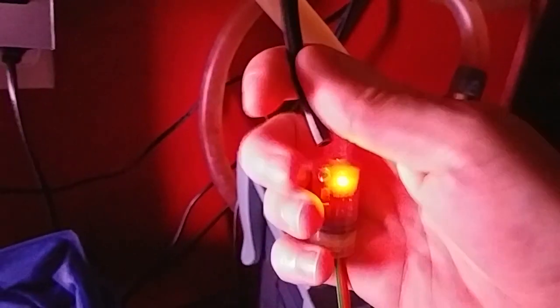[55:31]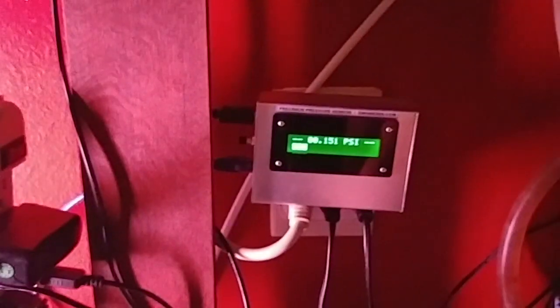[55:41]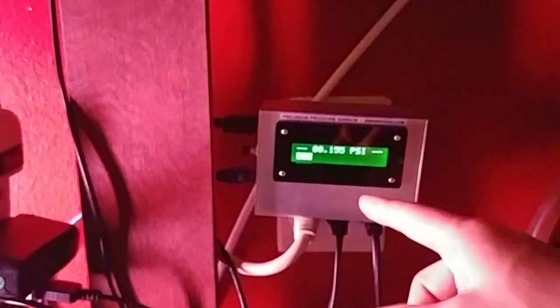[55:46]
Underneath the tank, we have this cord coming in, and it's pretty cool because this is just standard aquarium air hose, and it perfectly fits the little inner ring of these 10 milliliter syringes. So give it a little pressure, that should stay. That's hooked up, obviously, using the Ethernet cable to this device, and I haven't figured out its final location, but for testing, this is pretty good right now.
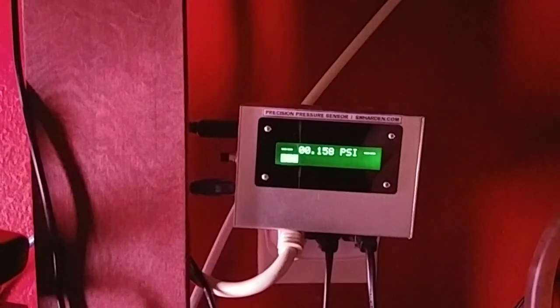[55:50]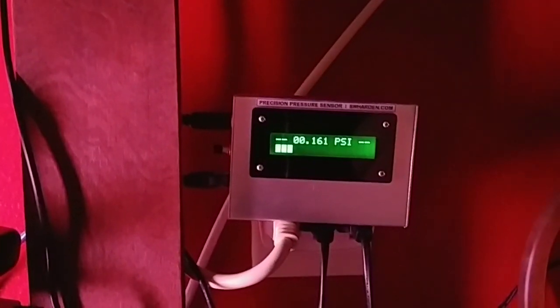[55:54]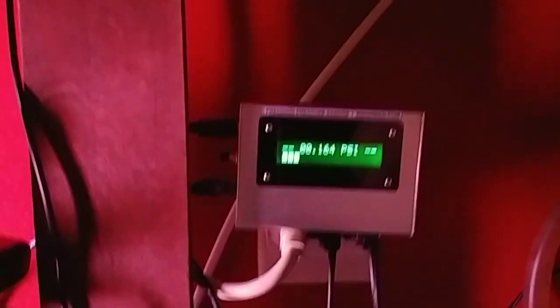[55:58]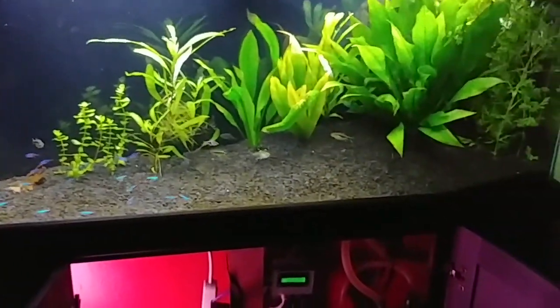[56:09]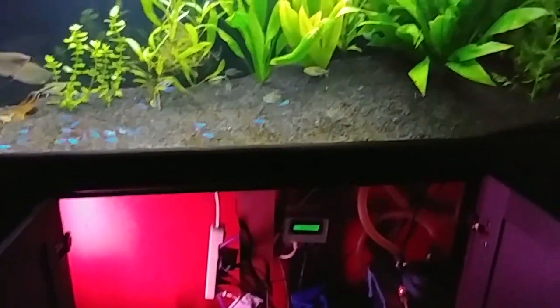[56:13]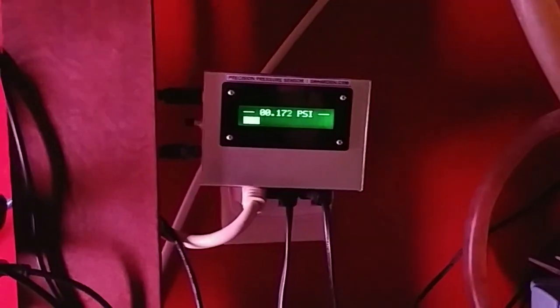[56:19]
And you can see that it's exactly what we would expect for suction. Right now, showing about negative 0.163 PSI. And again, ultimately, the goal is to interface this with a yeast reactor, which will live down here. But for now, I think proof of concept indicates that everything's working. And the aquarium just has to wait now for me to figure out the biological side of the yeast reactor. But that's a pretty cool project start to finish, and it looks like it's working pretty well.